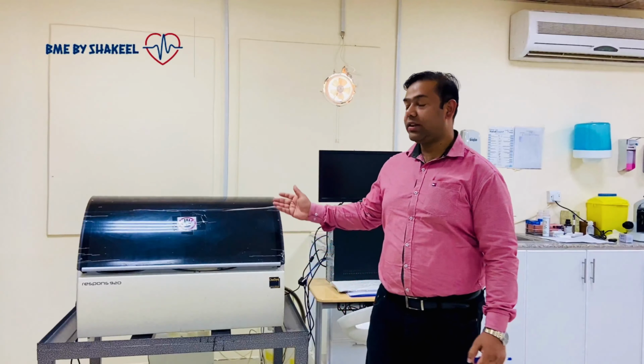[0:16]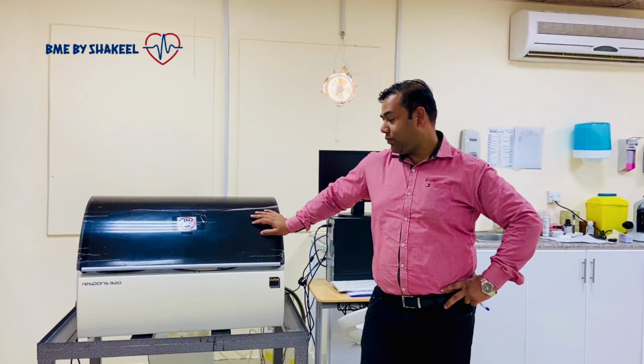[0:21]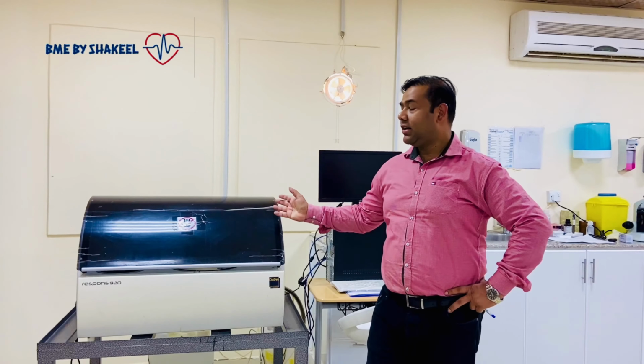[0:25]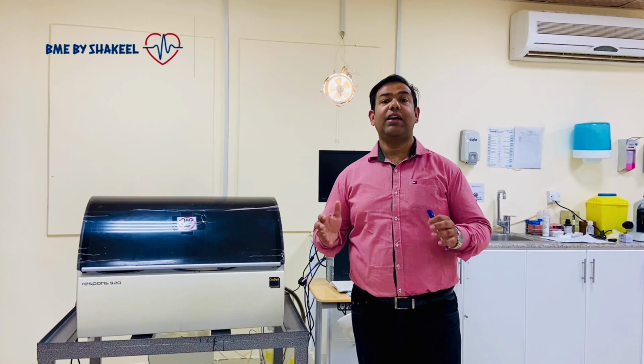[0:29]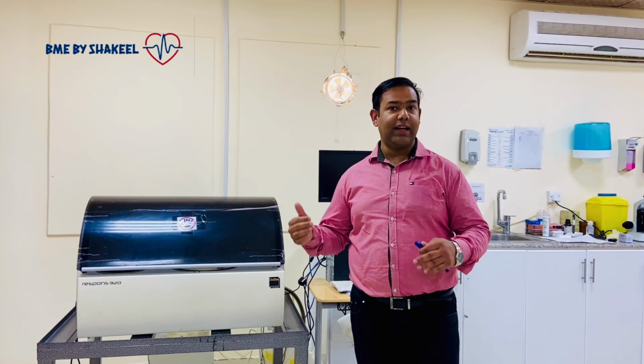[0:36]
Today I am here with Diasys Respons 920, and the problem which we are going to solve is related to the photometer. Here the customer had a UPS, and because of the high voltages it was damaged, and after that the customer directly connected the analyzer with the power supply.
Because of that it damaged many things in the analyzer, and especially damaged the photometer assembly. So today we are going to replace the photometer assembly. I think before that I never uploaded any video in which I replace the photometer assembly.
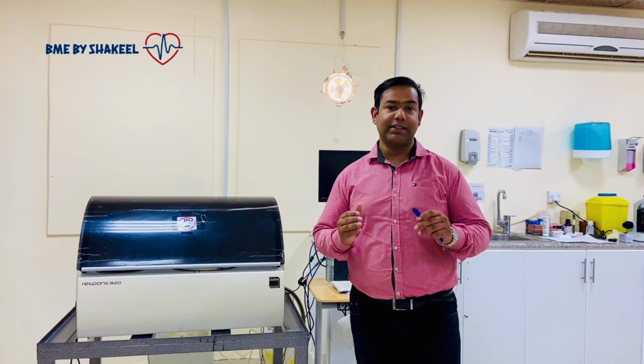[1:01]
So today we will learn how to replace the photometer assembly, and after that we will see the results. Hopefully everything will be okay after replacing the photometer assembly. Let's start today's video.
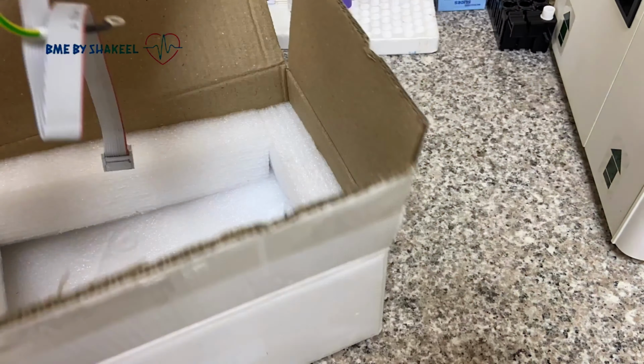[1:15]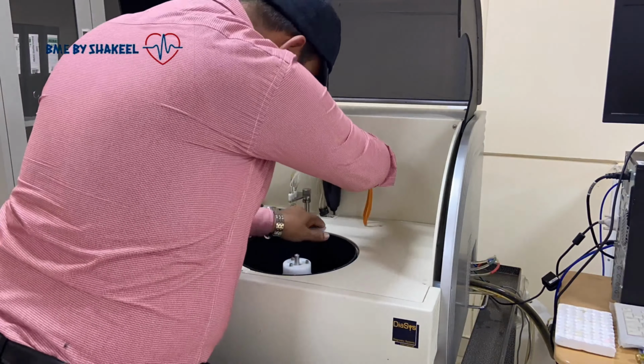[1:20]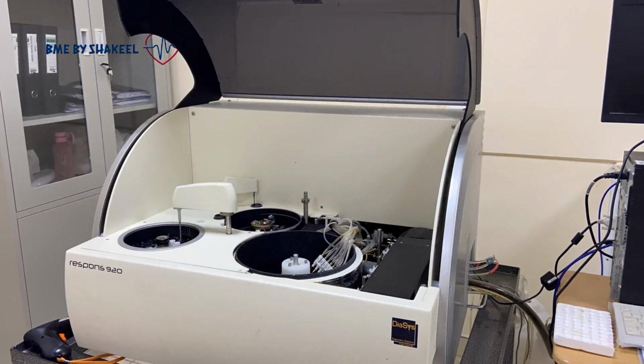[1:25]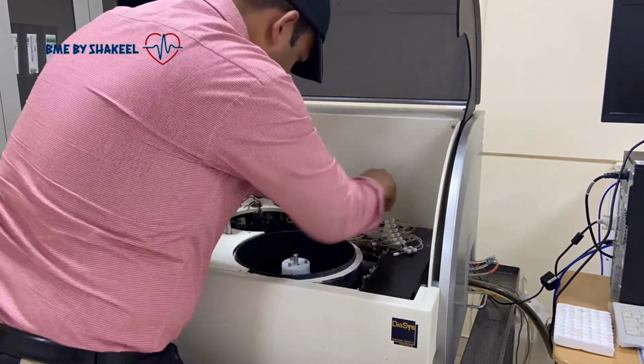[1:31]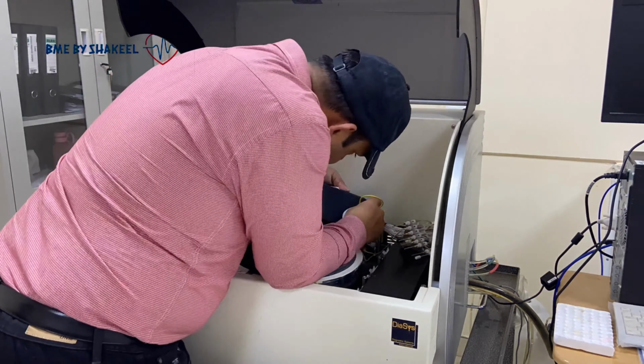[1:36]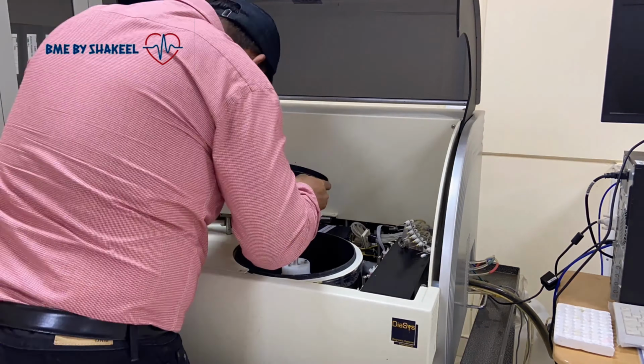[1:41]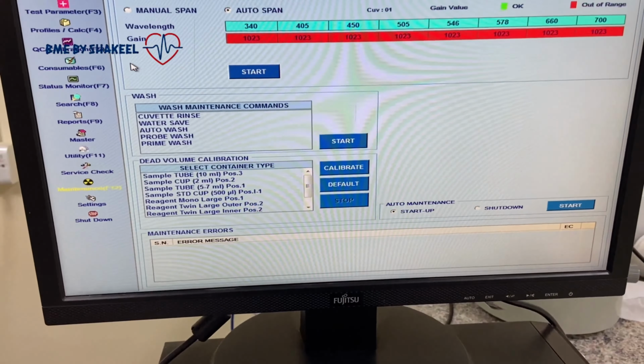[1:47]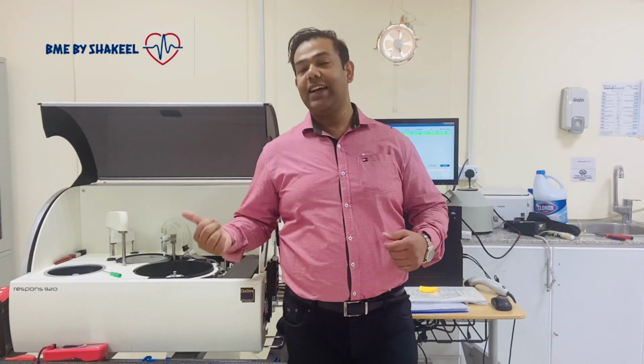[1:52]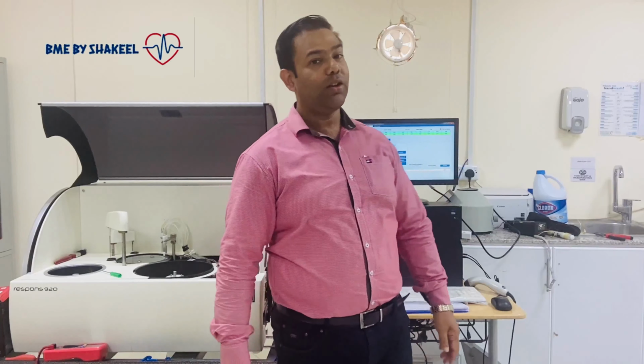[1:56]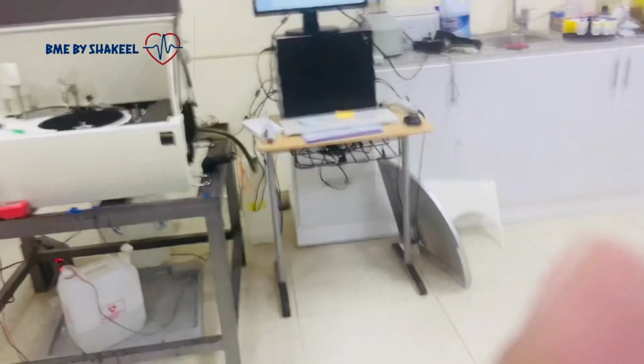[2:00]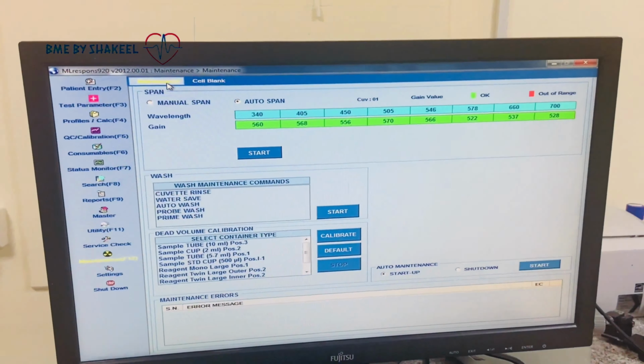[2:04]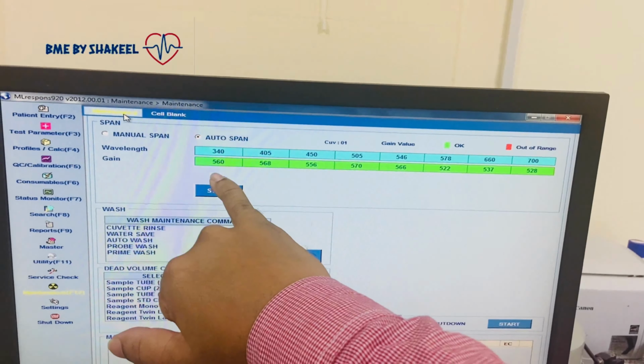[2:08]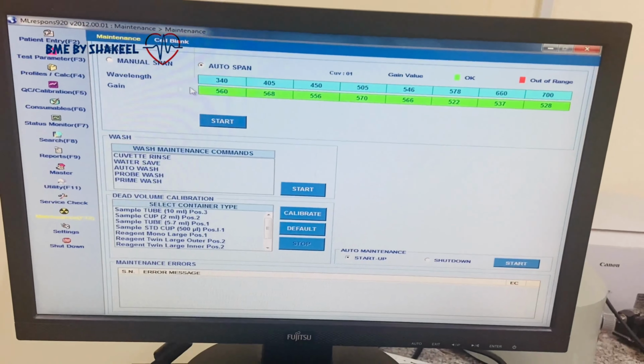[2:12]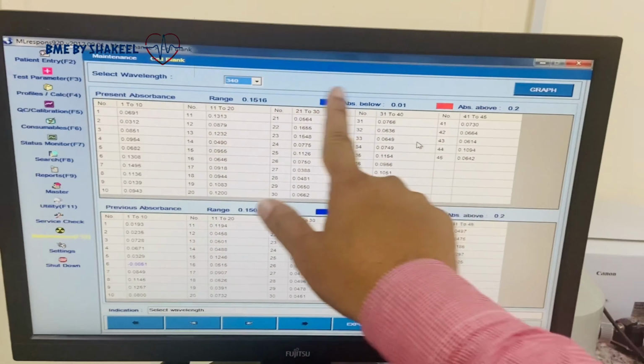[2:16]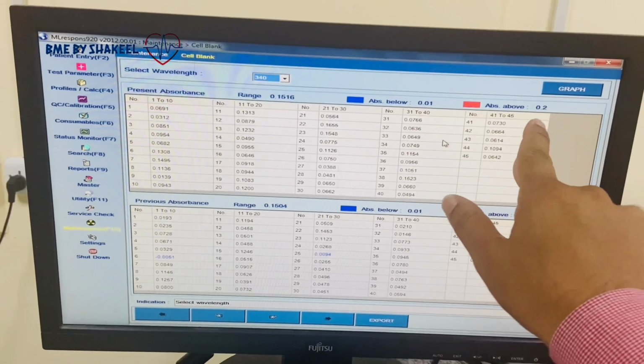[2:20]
So guys, the analyzer is okay now, and now let me show you the gain value of the photometer as well as the cuvette condition. Everything is within the range, and the range of this gain is between 350 up to 900. Let me show you the cell blank, meaning the condition of the cuvette. You can see now all are within the range from 0.01 up to 0.2.